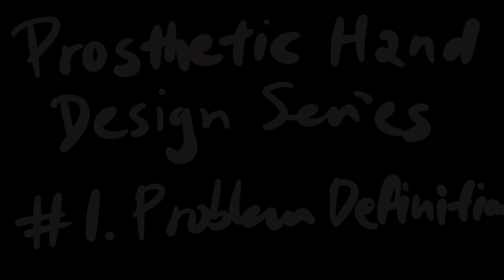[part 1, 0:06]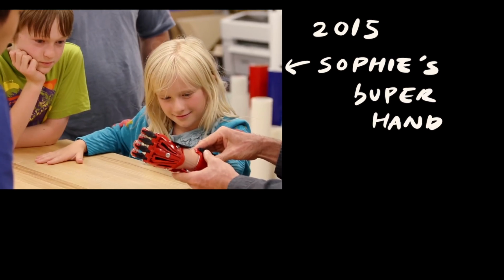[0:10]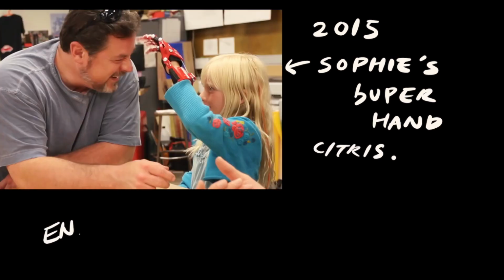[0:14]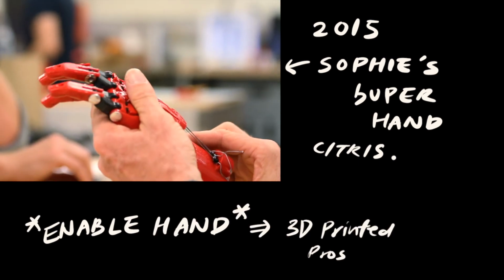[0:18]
The reason I'm doing this goes back to 2015. Back then, I 3D printed a prosthetic hand for kids with hand deformities, with a design provided by a maker group called Enable Hand. And using the model provided here, I was able to create a 3D printed prosthetic hand for a kid who was born with hand deformities.
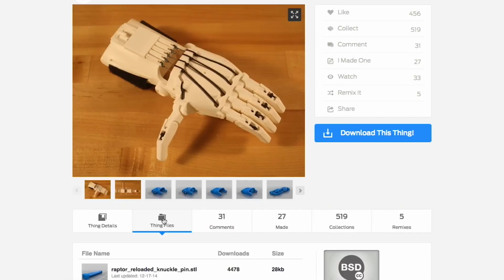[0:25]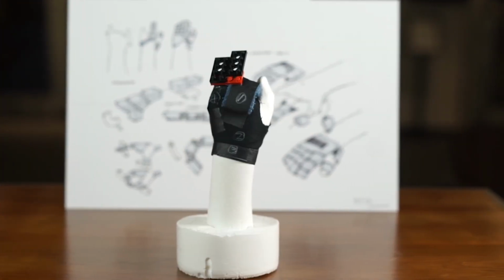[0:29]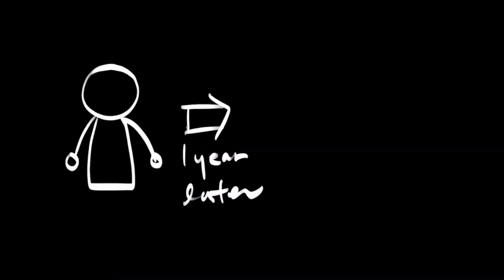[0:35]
The concept of 3D printed prosthetic hand was a game changer because they could be fabricated at a low cost compared to commercial prosthetic hands. It was especially effective for kids since it could be easily replaced multiple times as kids outgrow the size of the prosthetics.
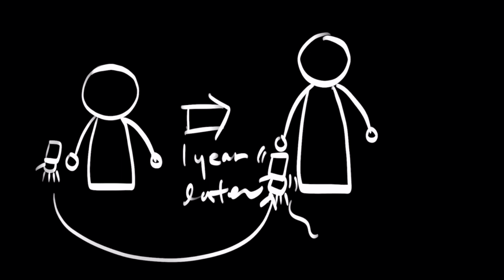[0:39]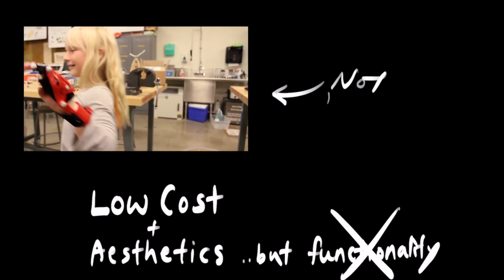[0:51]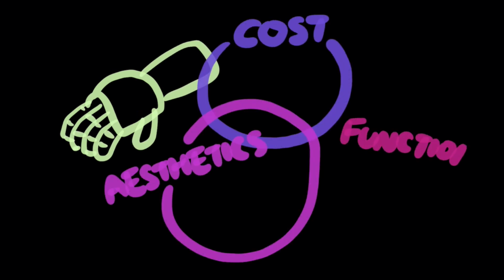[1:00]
However, the main issue with this design is that it is not functional for most of the hand types since it was so diverse. So even with its aesthetics and low cost, it did not provide enough functionality. I wanted to build my own prosthetic hand design that fulfills all three circles of cost, aesthetics, and functionality.
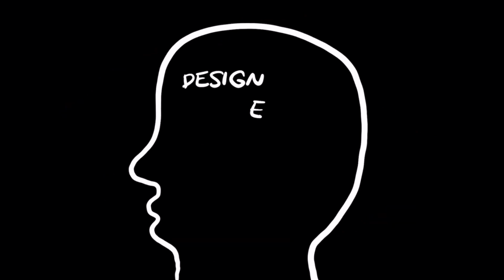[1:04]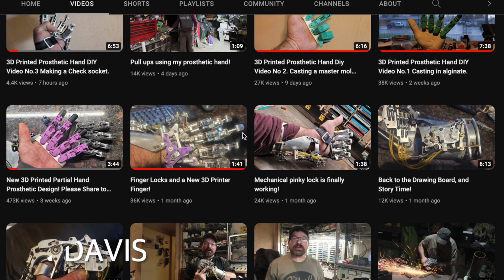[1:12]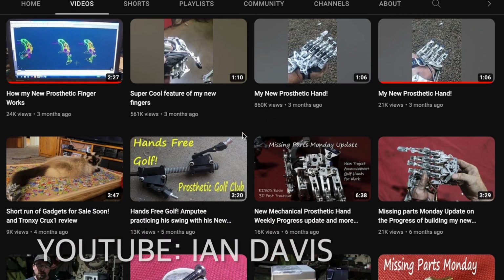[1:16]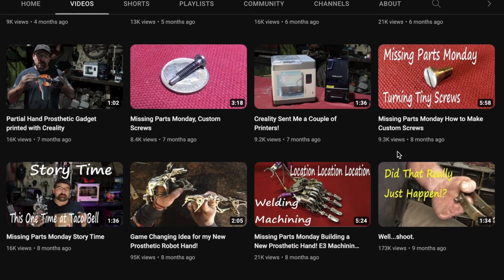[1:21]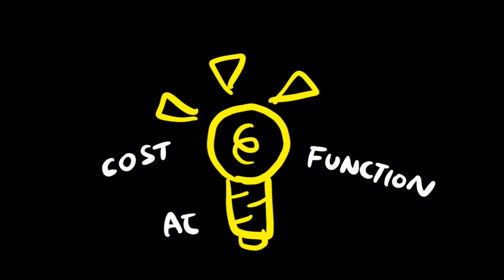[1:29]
But I did not have a proper design experience or skill sets at that time to solve this complex design problem. Then all of a sudden, in 2023, I saw this video by Ian Davis. This guy built his own prosthetic hand in his garage that was super functional with a badass looking steampunk design, which just looked fantastic. And this invention suddenly gave me a brilliant idea of making prosthetic hand that could fulfill functionality, aesthetics, and affordable price.
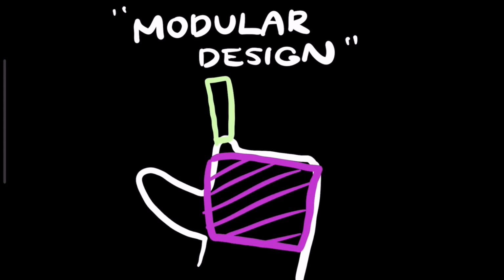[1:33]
And the key idea is to use modular design, where the prosthetic hand could be basically assembled based on kids' hand shapes like a Lego. I have not done anything in detail yet, but I'm trying to share the design process that could hopefully give some motivation to the other designers or makers to do the similar things by looking at it.
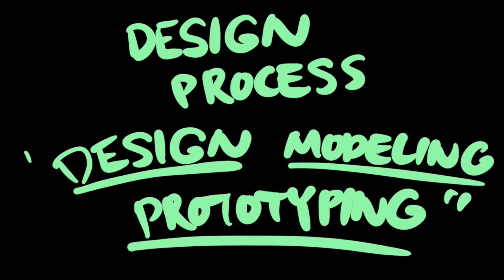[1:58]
So after this video, I'll try to update my progress as I go through the design process, such as concept drawing, modeling, and prototyping.
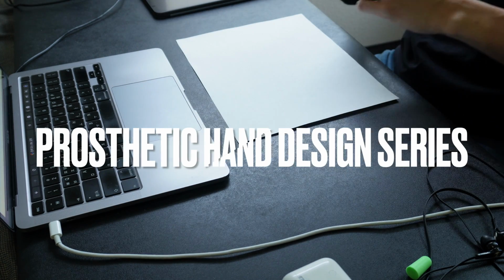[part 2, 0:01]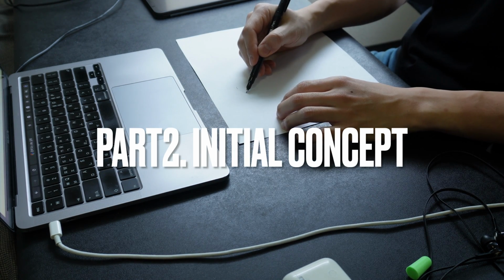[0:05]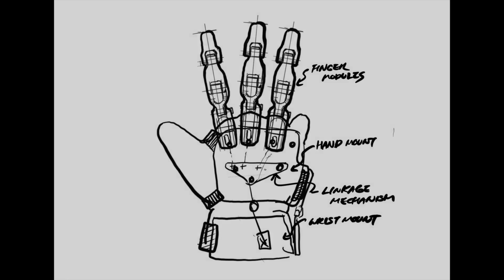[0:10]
Welcome to the channel, and this is the second prosthetic hand design series episode. And today I'll show you how I came up with the initial concept using a rough sketch.
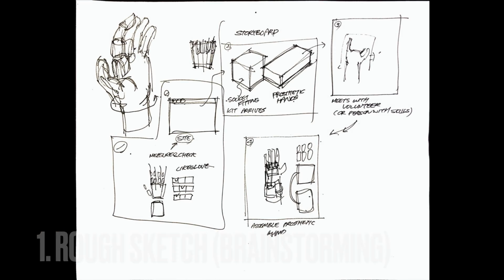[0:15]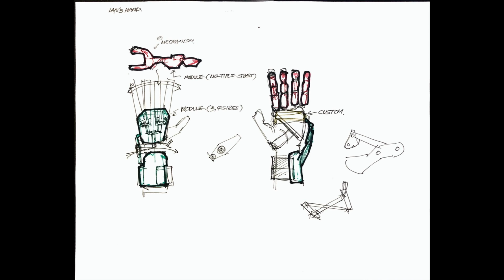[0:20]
I first started with the rough sketch using a pen and paper to just draw ideas that came up to my mind without thinking too much in detail.
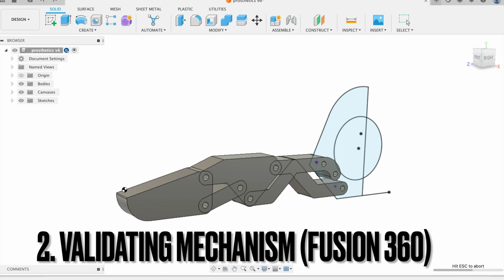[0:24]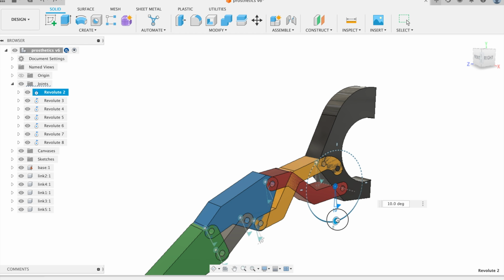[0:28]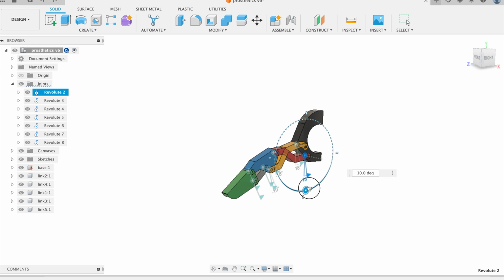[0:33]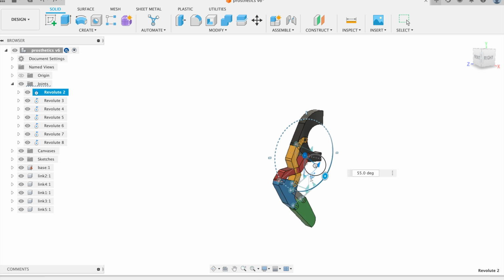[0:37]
After that, even though it's an initial concept generation stage, I had to make sure that the mechanism of the prosthetic finger part works fine. Using Fusion 360, I was able to check the components will work fine as long as I keep the linkage mechanism as drawn here. Then I moved on to iPad and started to draw the concept in detail.
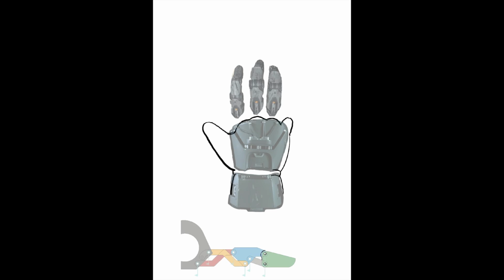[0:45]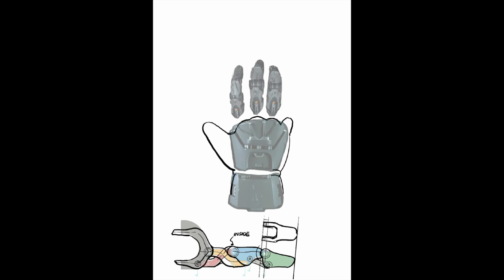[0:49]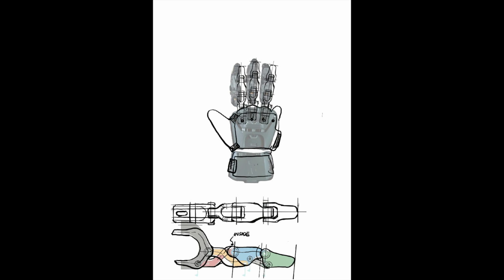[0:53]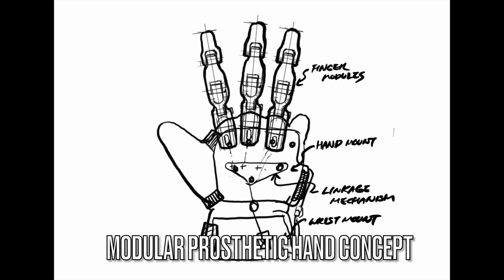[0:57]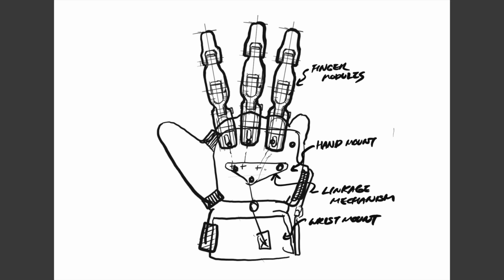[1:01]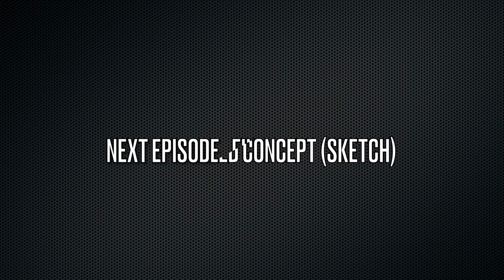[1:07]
Here, by using the reference images I found on Pinterest as a tracing image, I could basically draw on them, referencing how the position of the finger or part should be. With some detailed sketches using the iPad Procreate app, I finalized the initial concept of a modular prosthetic hand and finger module. And before moving into the modeling, like CADing stage, I'll evolve this concept into a detailed finalized sketch.
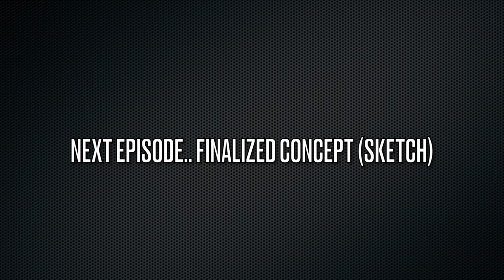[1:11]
So this was a quick update on the initial sketch part, and I'll see you in the next episode with the finalized concept with the sketch.
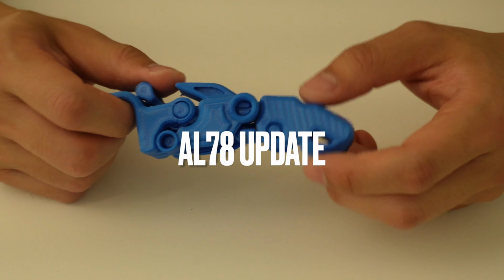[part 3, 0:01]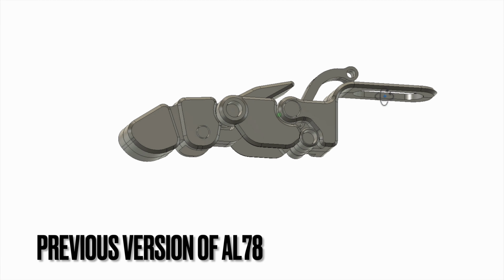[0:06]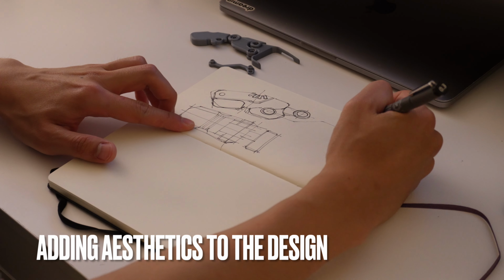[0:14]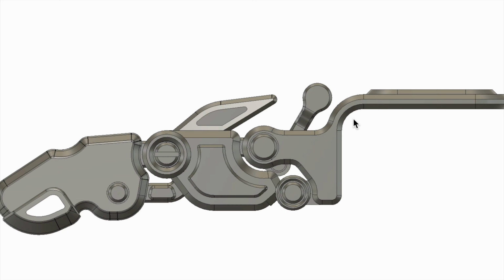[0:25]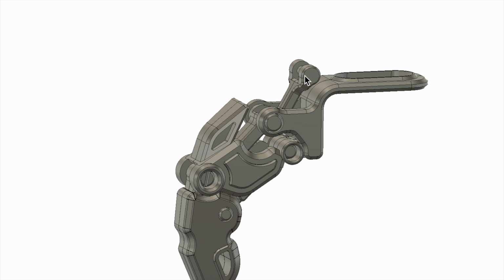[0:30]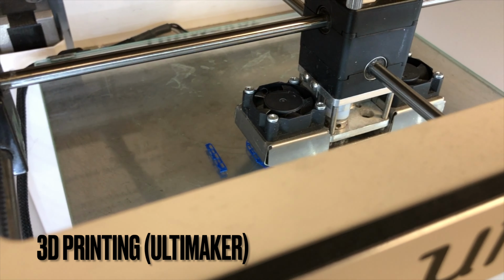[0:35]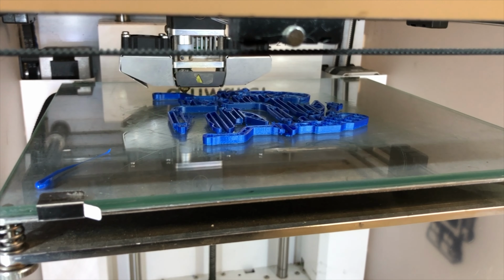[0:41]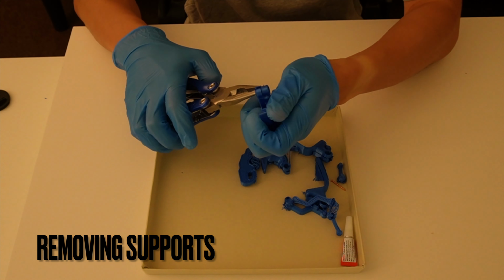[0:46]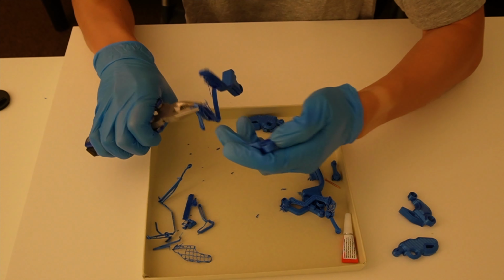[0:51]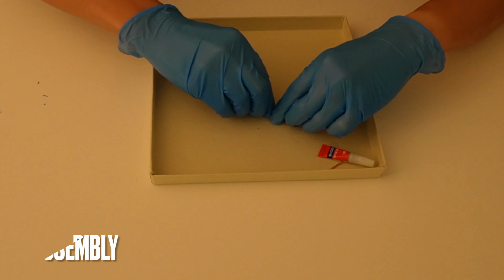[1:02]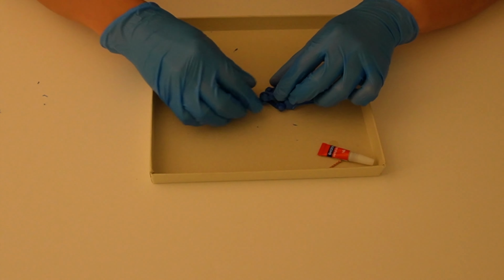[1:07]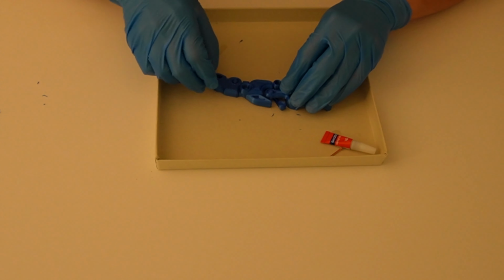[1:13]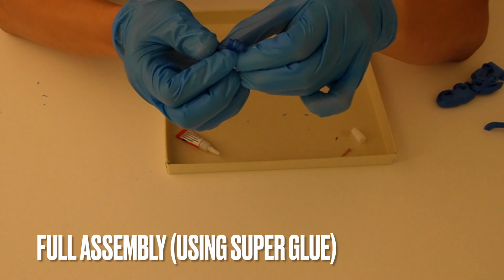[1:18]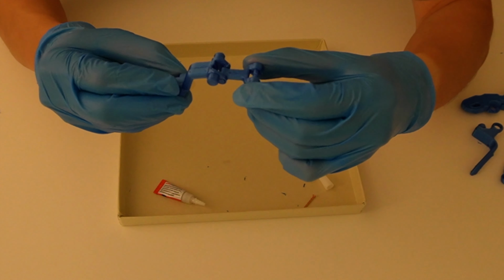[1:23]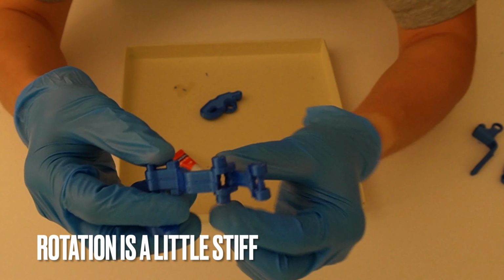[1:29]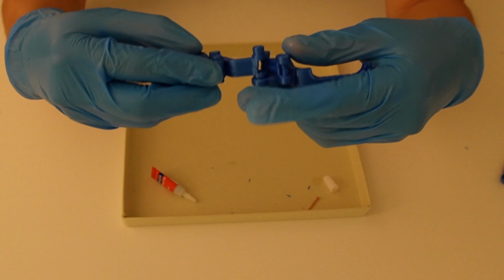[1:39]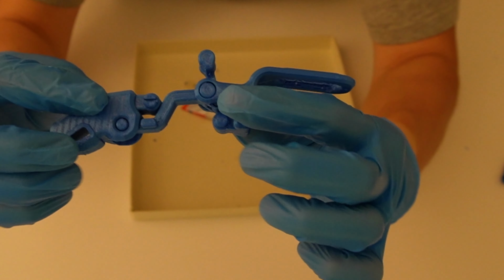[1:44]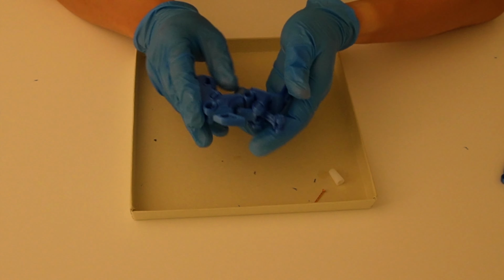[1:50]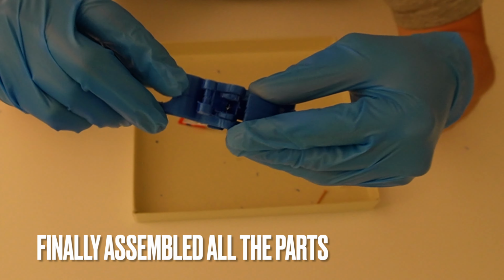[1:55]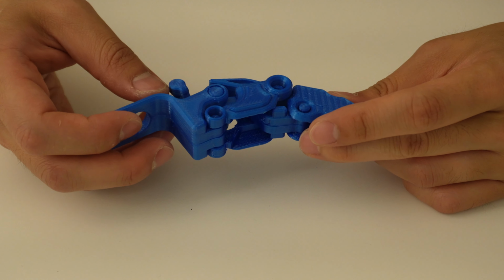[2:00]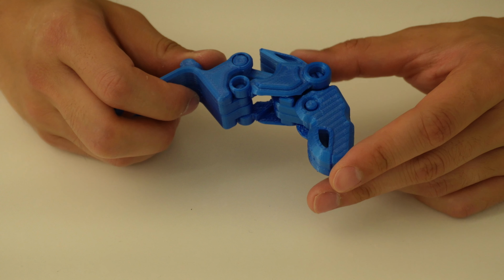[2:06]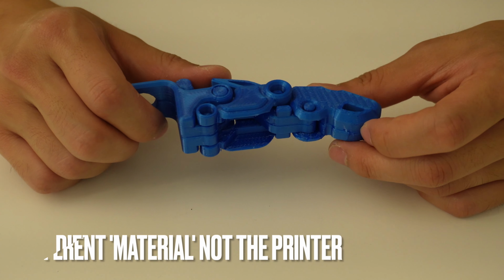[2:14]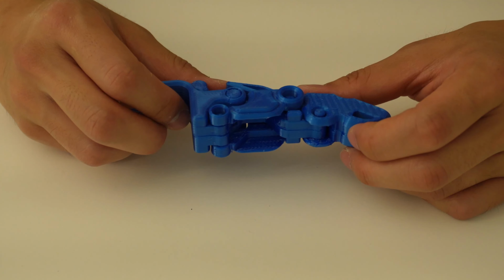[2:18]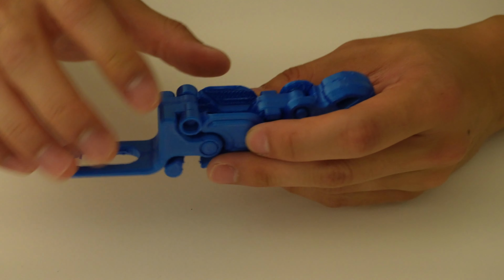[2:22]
Quick update on the second prototype of AL78. What I really wanted to improve compared to the first prototype was the aesthetics, actually. But the problem is that I used a different 3D printer this time. I used an Ultimaker with breakaway filament as a dual extruder last time, which really made a good quality on the surface part that requires supports inside.
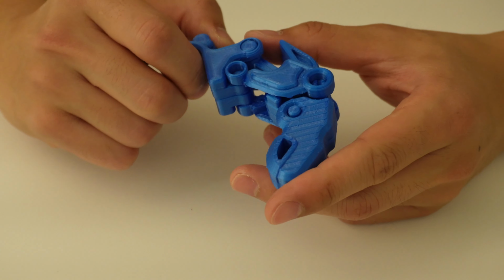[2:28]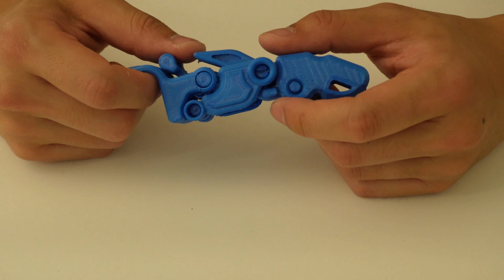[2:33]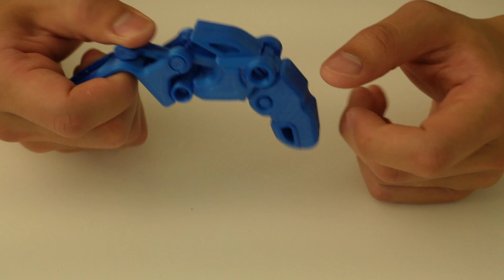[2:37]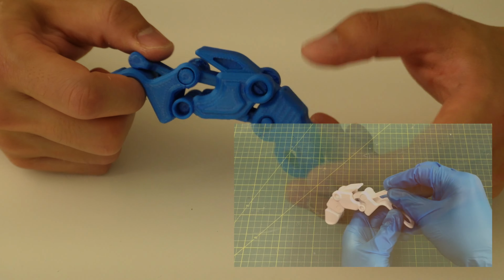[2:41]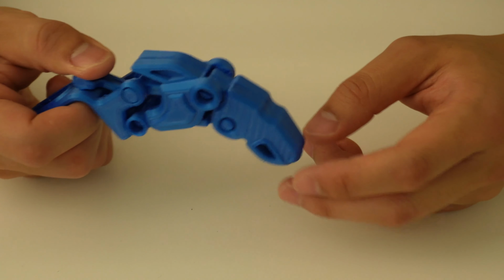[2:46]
However, I was a bit arrogant this time, thinking that it might actually work without the support material, so I went with just a single material and ended up having this very stiff mechanism compared to the very smooth transition that was happening in the last prototype. So yeah, that's pretty much the update for this prototype.
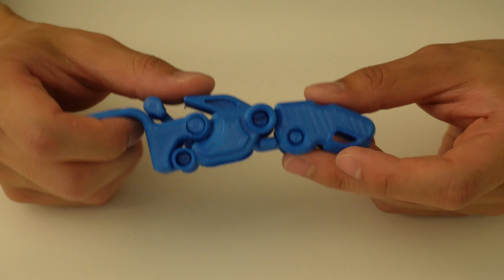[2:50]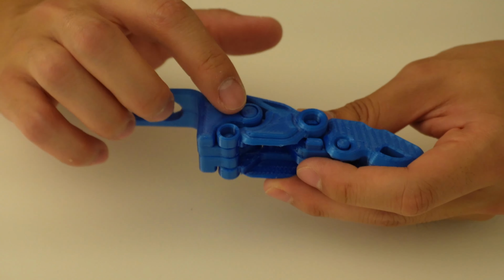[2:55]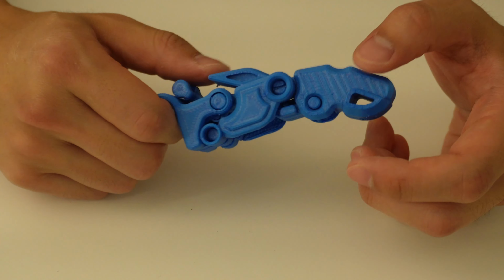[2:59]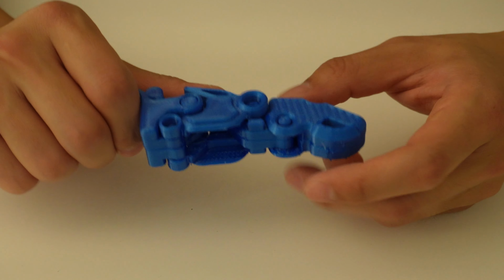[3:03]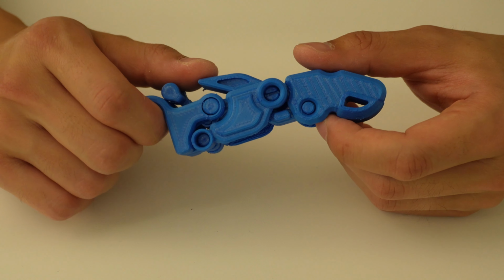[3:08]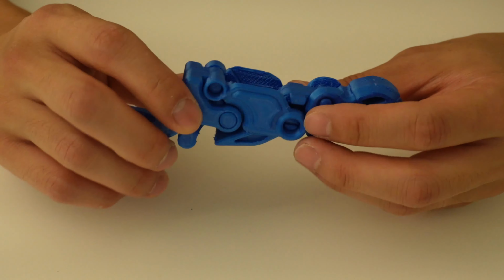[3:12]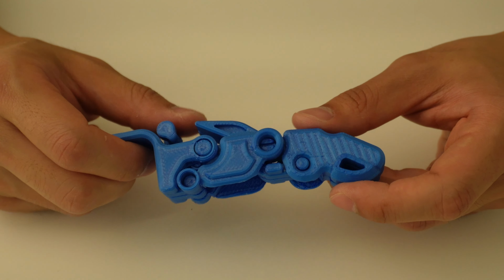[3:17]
And for the next, the third AL78 version, I'm trying to implement some sort of spring system that can actually put this actuated finger back to the original position. And second, I'd like to add a little bit more aesthetics to it. And lastly, I will use the breakaway support filament again to have smoother actuation. So yeah, that's pretty much it for this version's update.
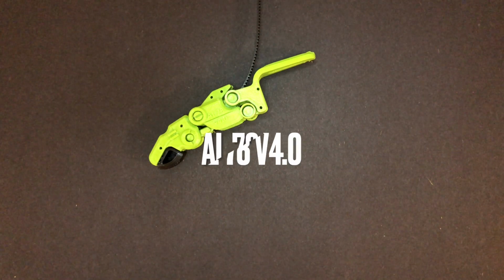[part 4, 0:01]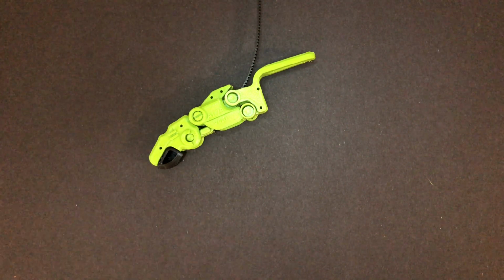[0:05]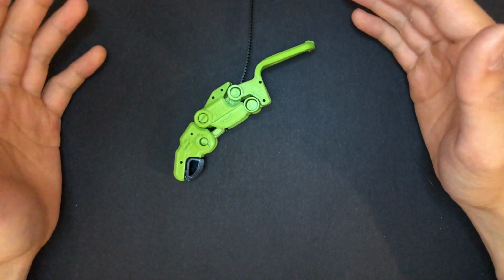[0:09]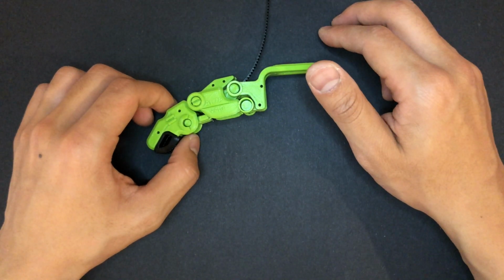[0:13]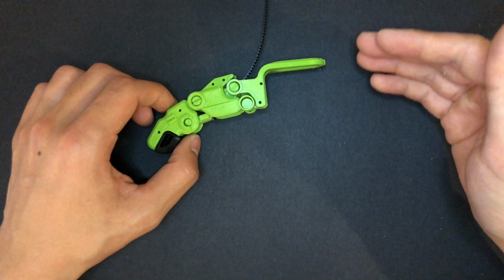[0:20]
All right, so here's the update from this week's progress of AL78, modular prosthetic hand, modular prosthetic finger actually. I tried to change three major features on this model and it ended up having a little bit of issue on the assembly part. So I'm just going to tell what I tried to change and what did not work.
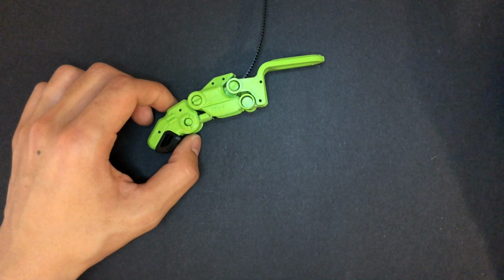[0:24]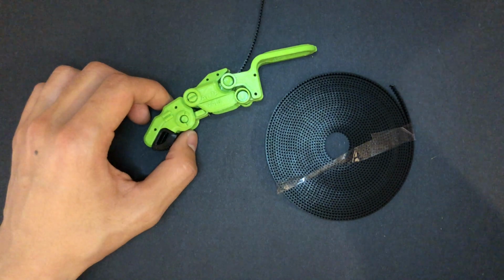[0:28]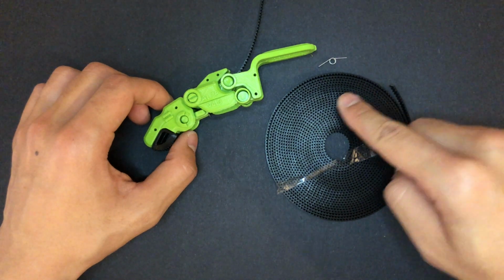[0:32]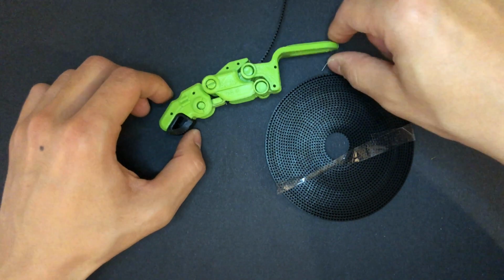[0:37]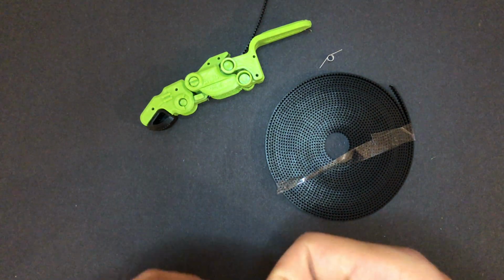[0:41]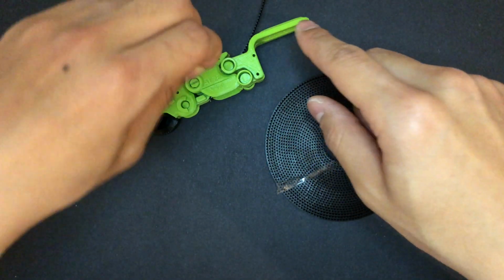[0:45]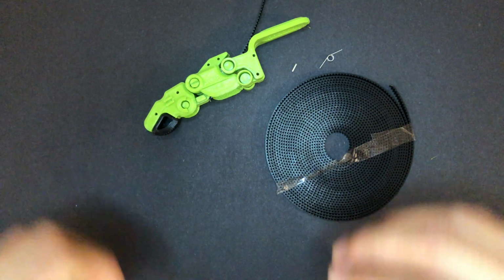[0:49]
So three major changes were, first, using timing belt for the tensioning system. And the second was to use mechanical spring to make a returning motion of the prosthetic finger. And last one is, instead of using super glue, I tried to use a small pin that can go through the model so it can assemble like a plastic model.
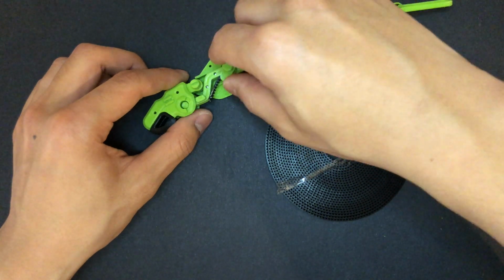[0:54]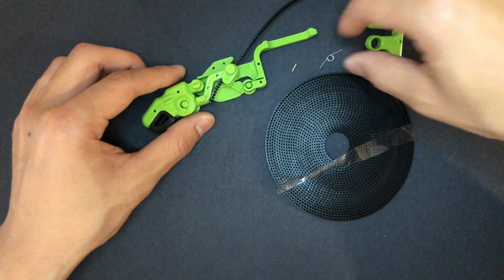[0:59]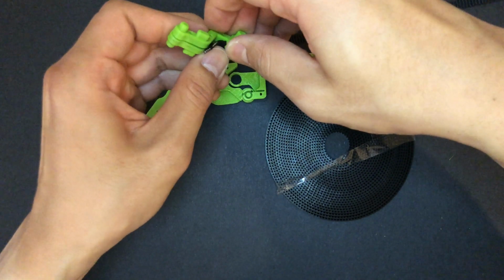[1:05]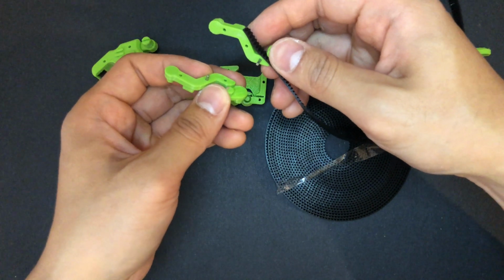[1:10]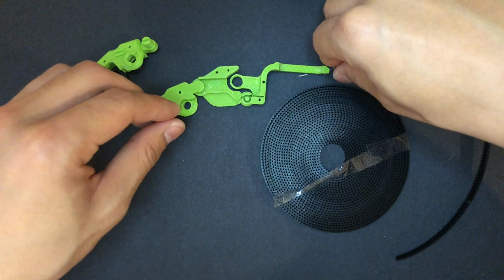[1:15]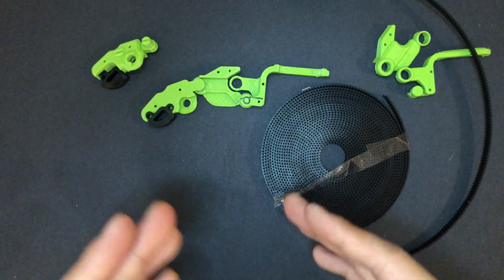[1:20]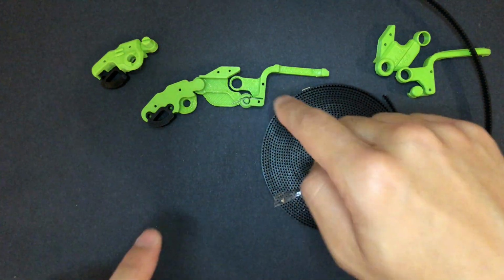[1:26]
And if I explain it by disassembling it, we can see that I input the timing belt in the middle part and also incorporating small dowel pins to connect those two parts together like this, eliminate the use of super glue. And the last part was trying to use the mechanical spring at the bottom part like this, but there are some little features that kind of prohibited the mechanical spring from working. So I'll try to update that on the next model.
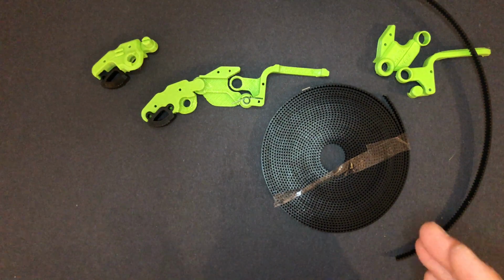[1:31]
So those were small updates about the current progress of AL78, and I'll try to update on the next week's progress.
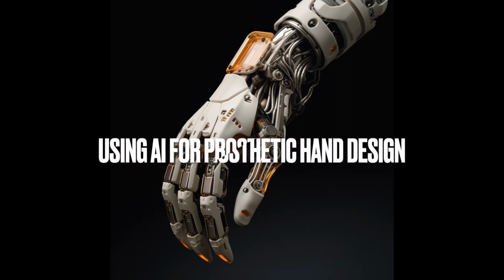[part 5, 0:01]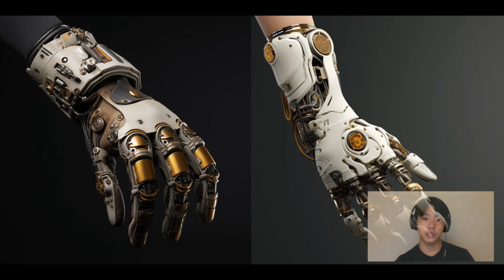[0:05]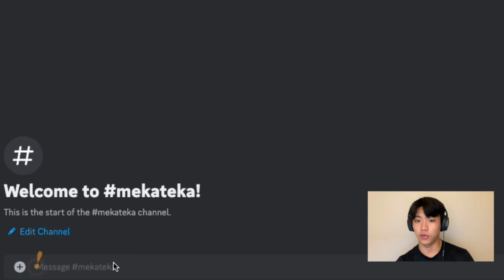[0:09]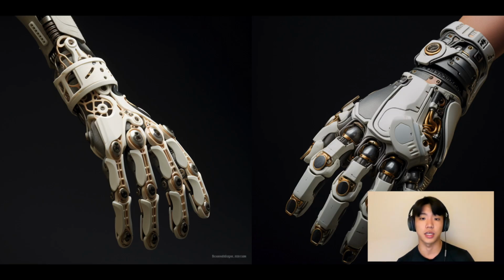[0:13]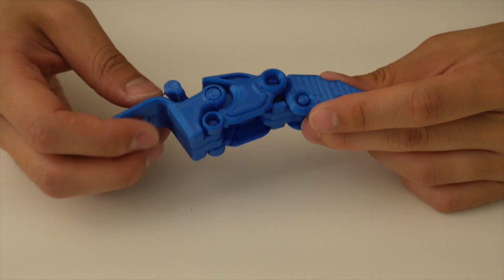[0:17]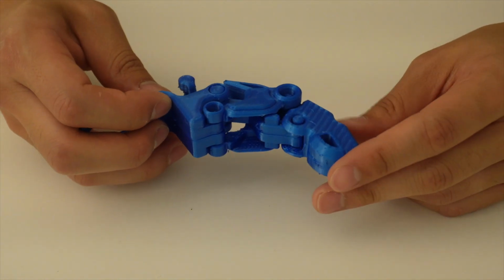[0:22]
In today's video, I'm excited to share my experience on how I used Midjourney for the first time to create cool reference images for the prosthetic hand design that I'm making. I've been working tirelessly on developing this modular prosthetic hand for a few months now, and I've found myself struggling to achieve the aesthetics that I envision.
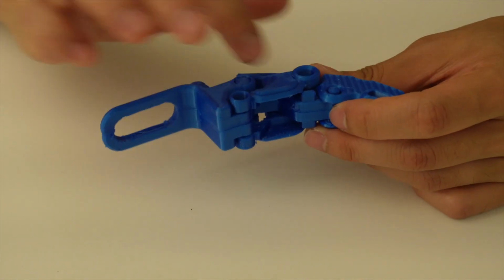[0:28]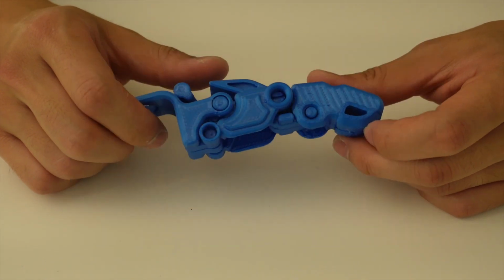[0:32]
While functionality is undoubtedly a top priority, I've always wanted the prosthetic hand to look as cool as those futuristic robotic hands that we see in sci-fi movies.
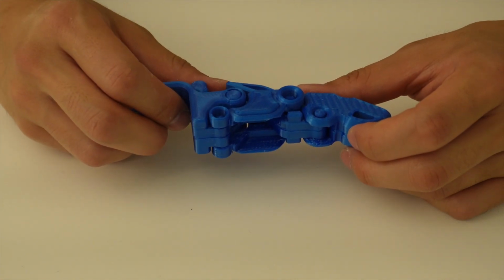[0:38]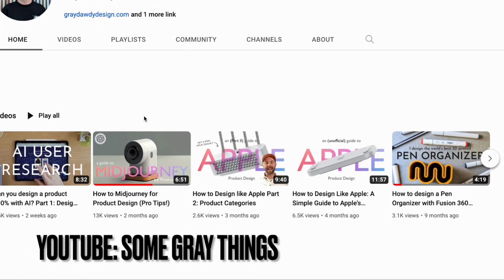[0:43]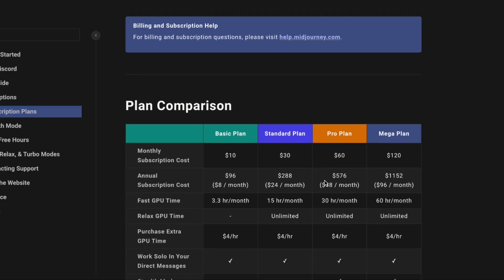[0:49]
That's when I stumbled upon a video by Some Gray Things, which tells about how even beginners can harness the power of Midjourney specifically for industrial designs. And after watching this tutorial, I decided to give it a shot using Midjourney's basic $10 a month plan. And the results were truly remarkable.
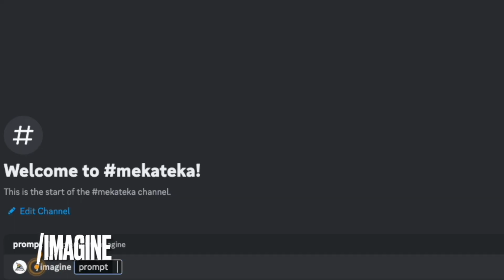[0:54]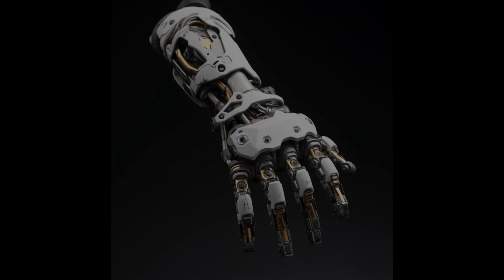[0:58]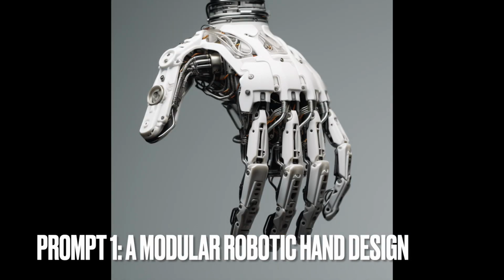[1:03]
I kicked things off by using the imagine function with a rather general prompt, a modular robotic hand design. This took a matter of seconds to generate these images, and I must say the results were very impressive.
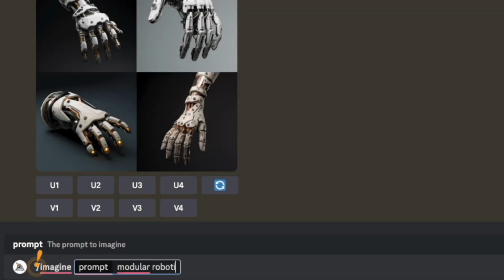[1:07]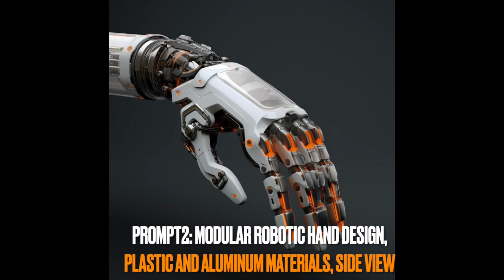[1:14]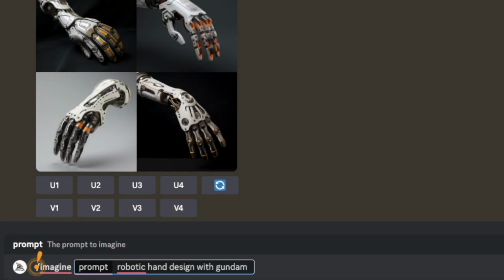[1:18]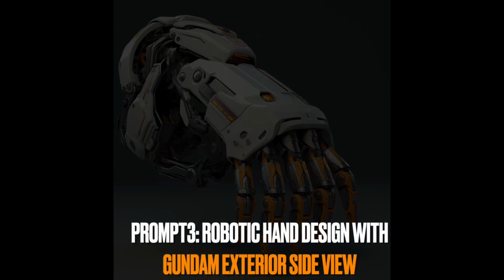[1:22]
Next, I wanted to incorporate material properties and even added a side view prompt for modeling. However, the generated images were primarily isometric views. I even experimented by adding Gundam exterior, but it didn't quite resemble the actual Gundam parts that I was hoping.
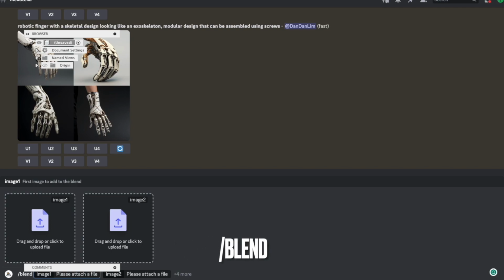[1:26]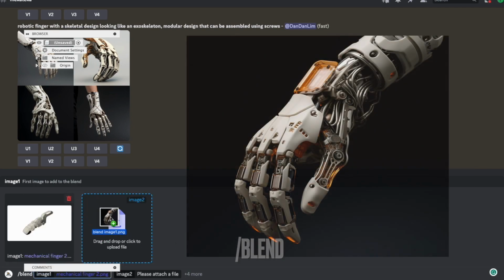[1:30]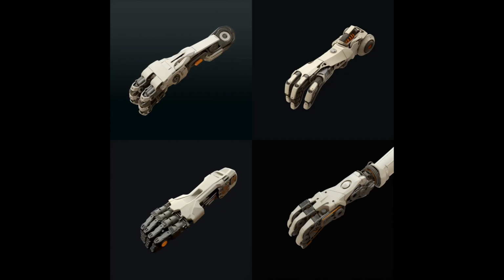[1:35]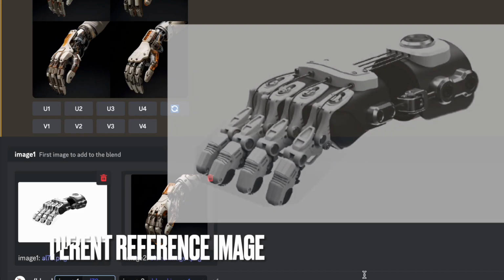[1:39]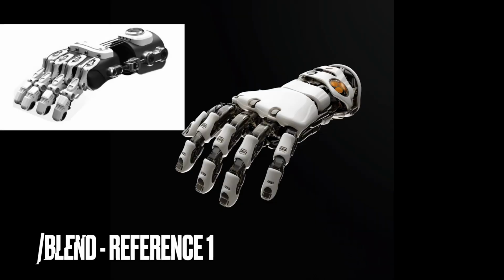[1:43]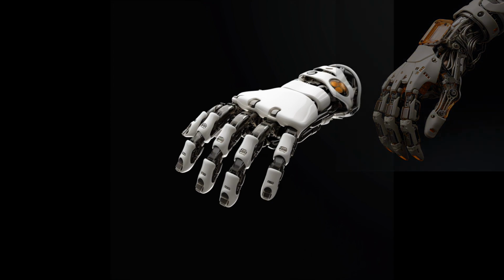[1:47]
I also explored the blend function to see if I can achieve better results by blending with the original design of my prosthetic finger. Surprisingly, it produced a full hand design rather than the finger part, which wasn't what I initially expected. However, it turned out to be a promising approach as the results looked better in comparison to my previous results when I used a full hand as a reference image.
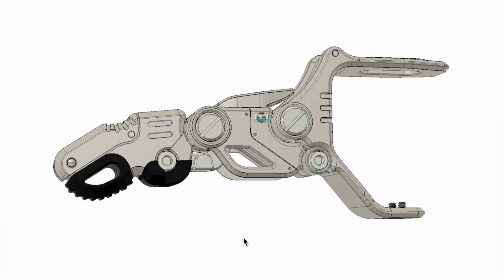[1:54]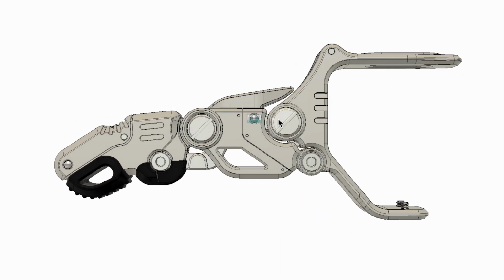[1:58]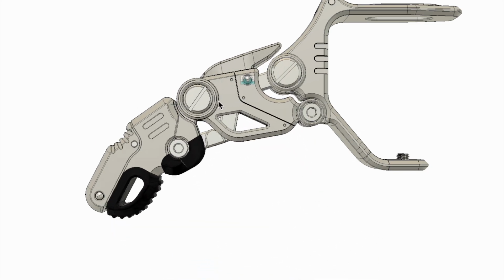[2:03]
Now, you might be wondering, how can we use these cool generated images to create a fully functioning prosthetic hand? Even though I spent less than an hour experimenting with this tool, I can already see its potential in providing valuable reference images to enhance the existing design.
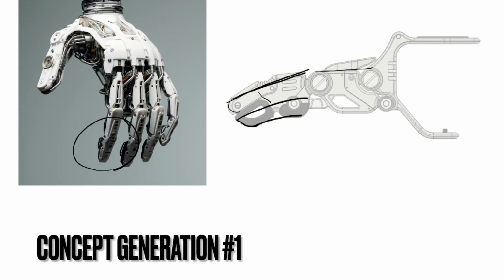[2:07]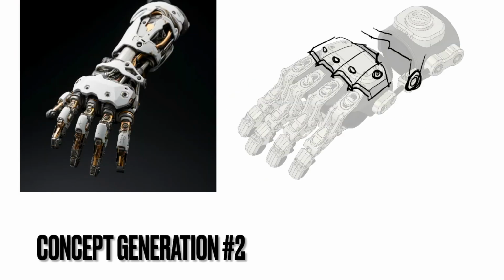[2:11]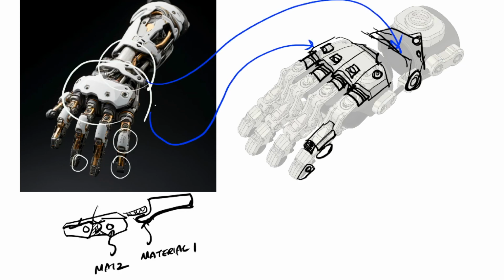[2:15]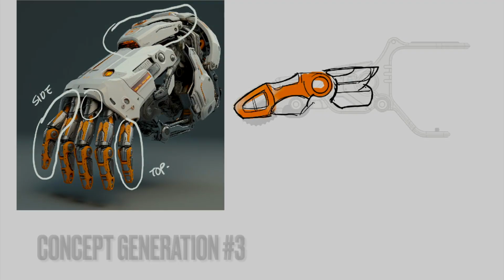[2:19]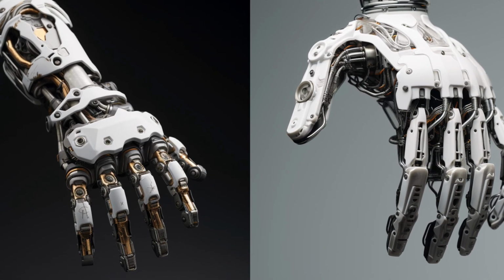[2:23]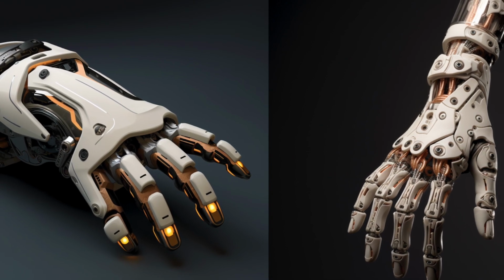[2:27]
These time lapses show you how I use these generated images as a reference to extract features that can be incorporated into new aesthetic design of the prosthetic hand. So that was the latest update on my exploration of using generative AI tools for mechanical design, and I'm excited to see if I can transform these newly generated concepts into a fully functional prototype in the future.
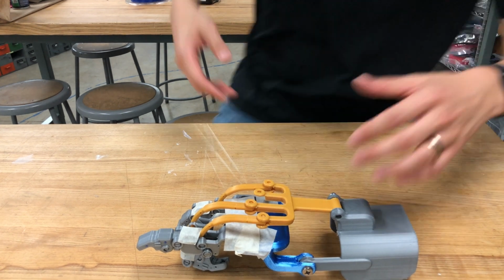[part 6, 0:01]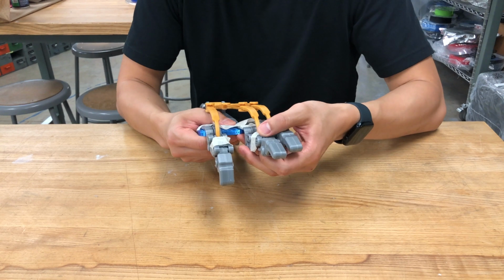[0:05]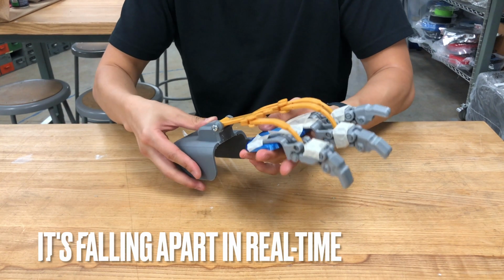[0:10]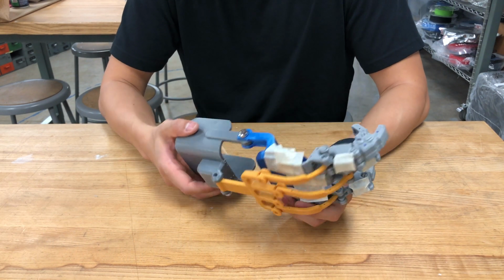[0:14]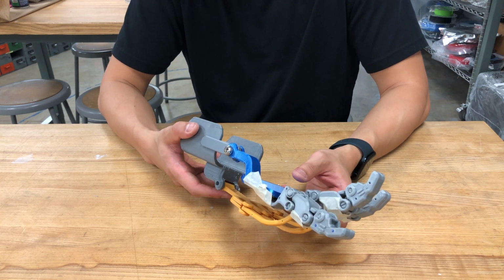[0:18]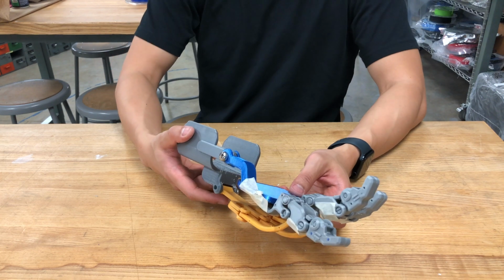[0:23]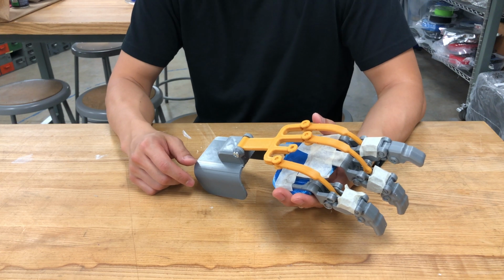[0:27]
Hello everyone. So I'd like to give a brief update about a mess that we made right now with assembling this prosthetic hand. But it's always good to give some of the updates on what's happening right now in this project.
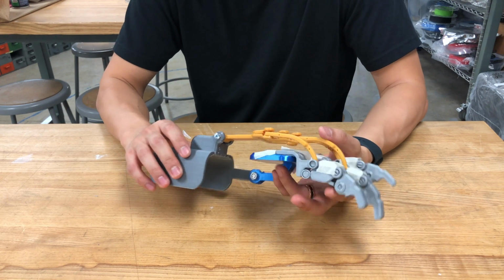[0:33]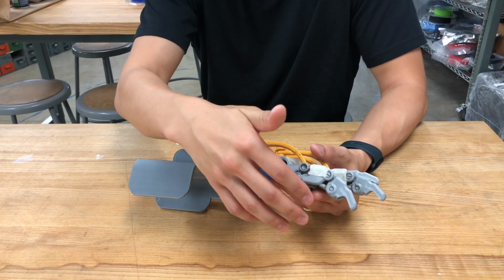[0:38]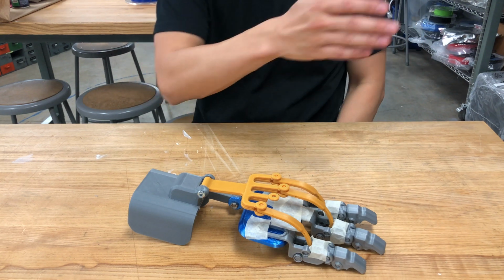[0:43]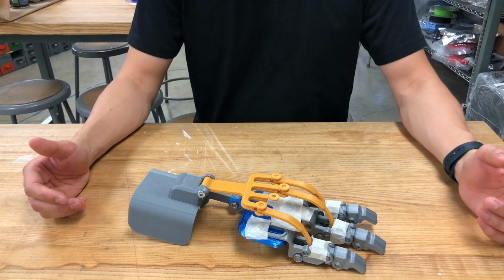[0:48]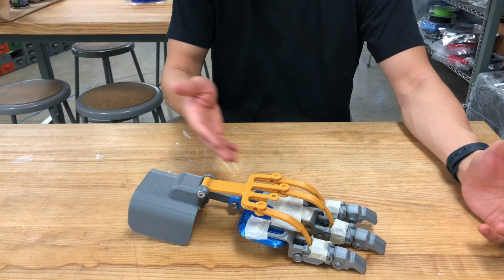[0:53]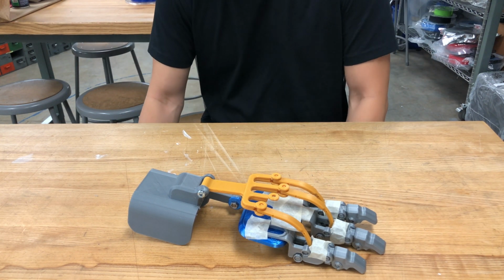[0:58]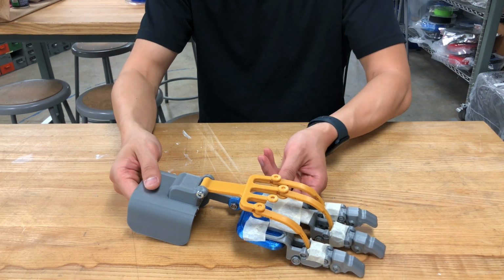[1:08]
So you know how in the previous videos I talked about the design and fabrication of this prosthetic finger, but I thought, why don't I move from there to build a full working mechanism on the hand. However, I was too optimistic that implementing this many parts could just work in one shot. So it ended up having multiple tapes and not working at all. Not at all, but like 20 to 30% of what I envisioned before.
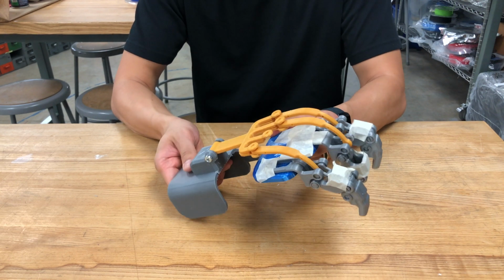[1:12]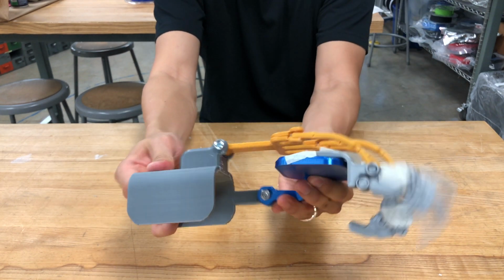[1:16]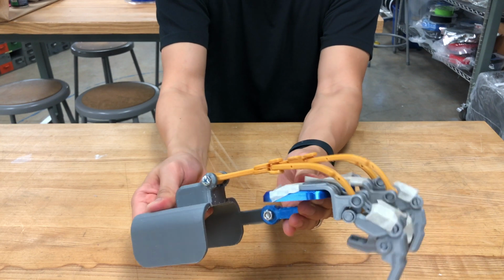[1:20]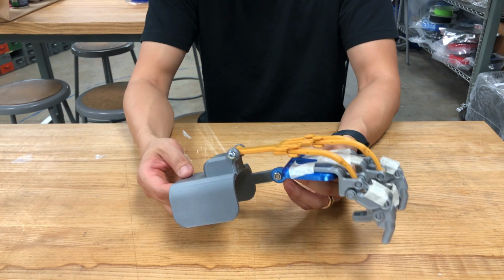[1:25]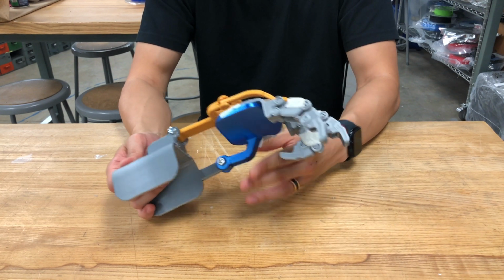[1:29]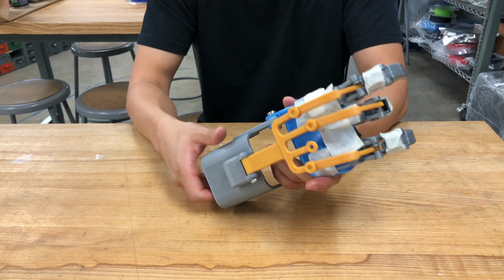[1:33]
But yeah, it's breaking in real time, but you can see that the wrist movement here could translate into a finger movement, right? I mean, this is something that I have to modify to have a smoother transition between the wrist movement and the finger grasping motion. But yeah, that's pretty much the update.
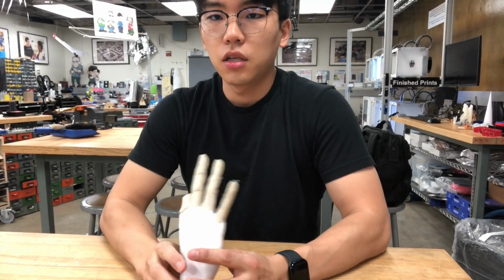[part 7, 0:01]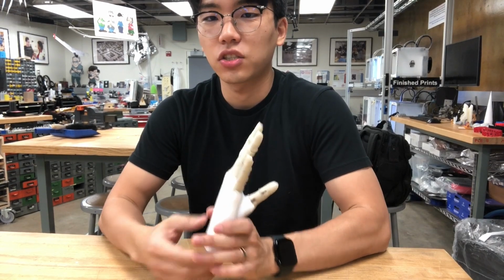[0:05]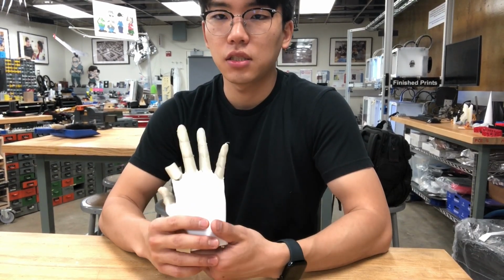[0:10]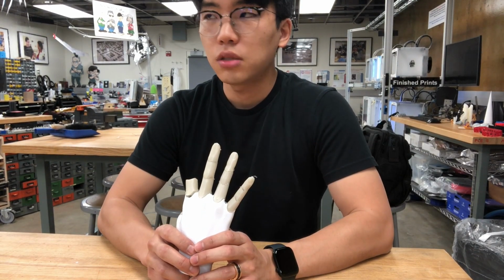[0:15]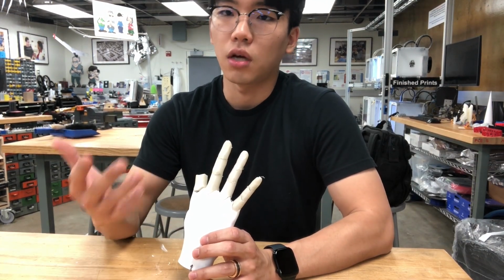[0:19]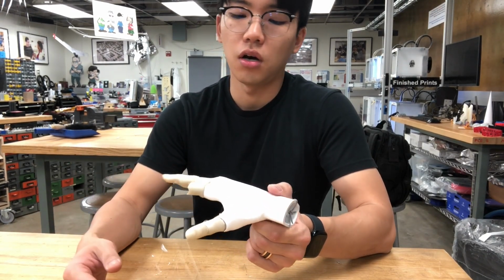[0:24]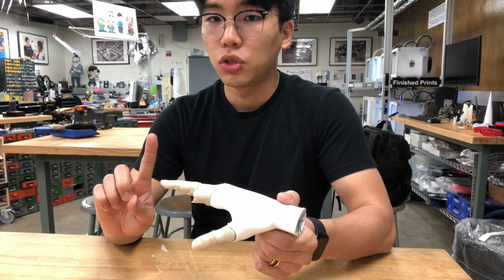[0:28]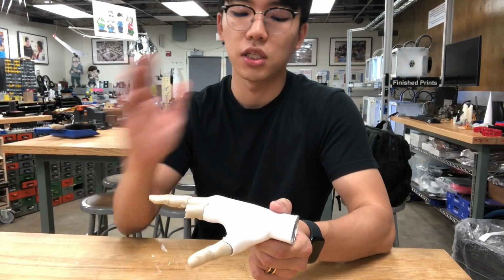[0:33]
Quick update on the progress that we have. This hand is not designed by us. It's actually a file that we download from Thingiverse. And the reason that we have this as a part of making prosthetic finger project is that since we cannot simulate the movement of finger amputees with our full hand, we thought having a representative model of those type of amputation would be very beneficial to simulate how our prosthetic hand is going to work once it's put on the
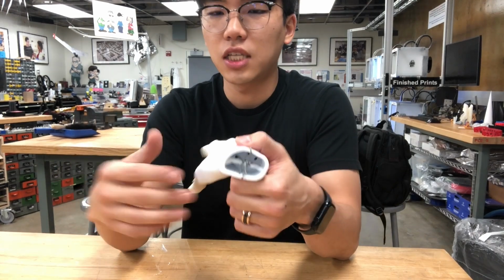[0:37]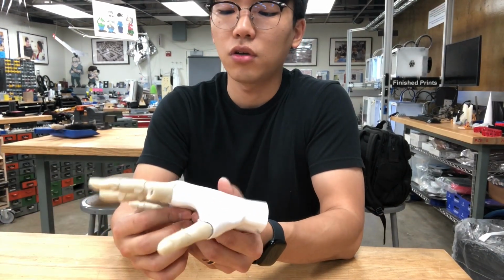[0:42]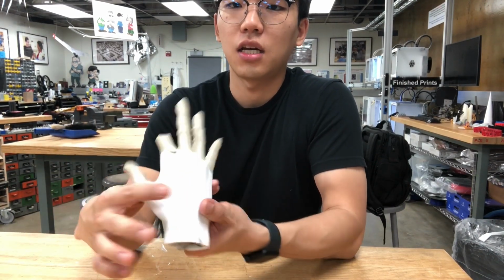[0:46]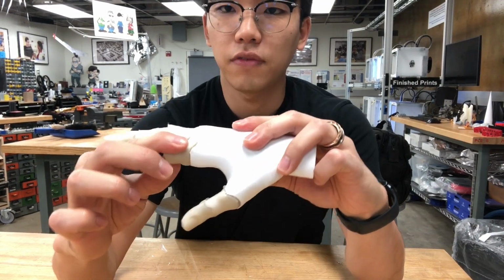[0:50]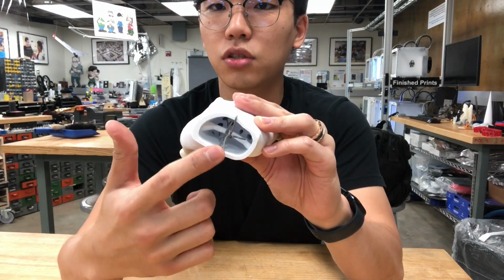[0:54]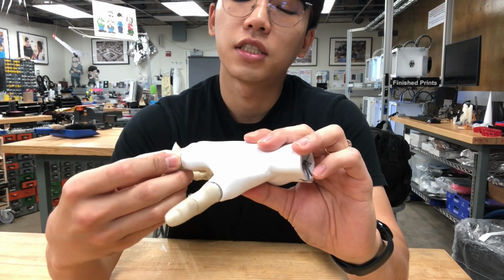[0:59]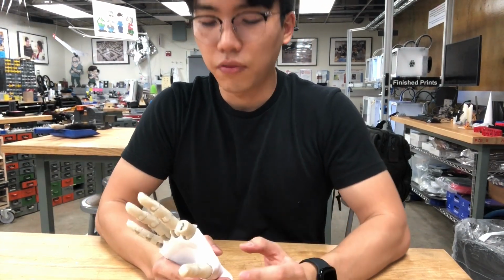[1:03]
users. So this model is originally intended to use some sort of elastic tendons, but since we do not have those, we just hot glued everything as it is, as a static, but only this part was left to be moved like this. And as you can see, we just used an electric wire that we found from a pile of trash. It seems like the movement is okay, but in order to suffice the purpose of a simulator, I
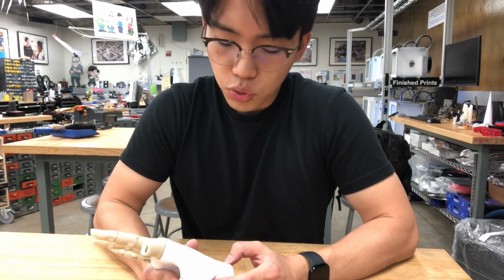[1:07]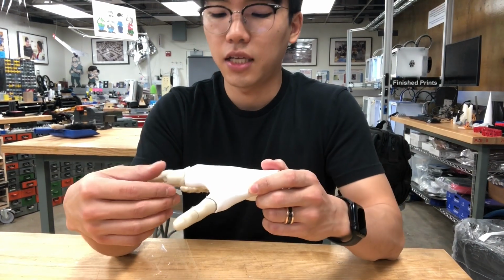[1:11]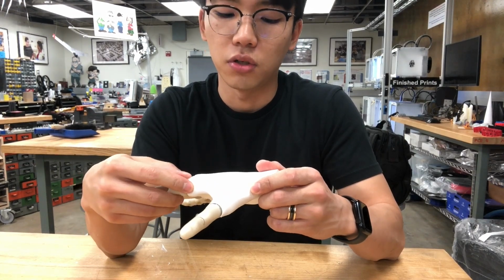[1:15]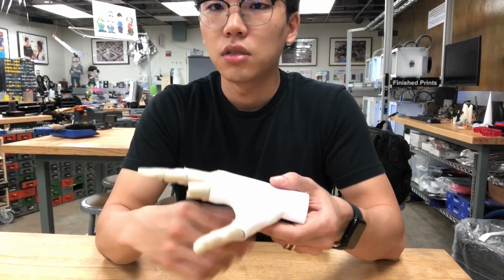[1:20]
think we do need to aim to design our own so that it can have a better motion on this revolute joint of the MCP joint. And that's probably gonna be our next step on the design. So stay tuned.
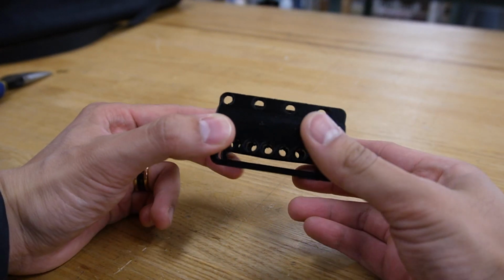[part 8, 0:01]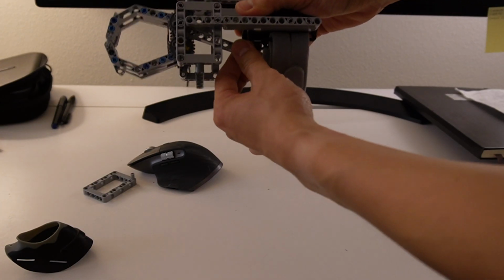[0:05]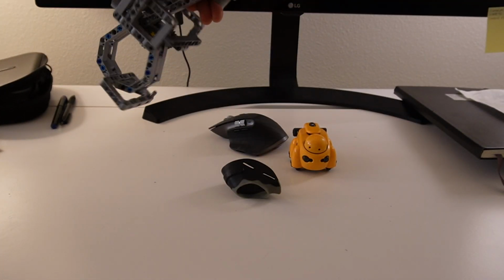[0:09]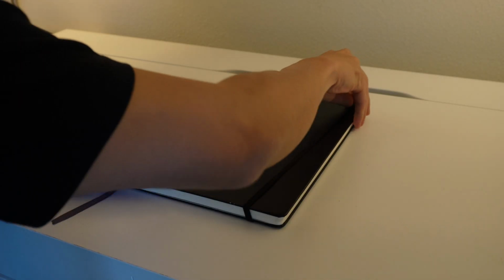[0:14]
This episode, I'm going to walk you through how I designed this custom Lego part that can be used to prototype a functional prosthetic hand capable of grabbing various objects as demonstrated. The part I will be designing is a wearable forearm mount to which Lego parts can be attached.
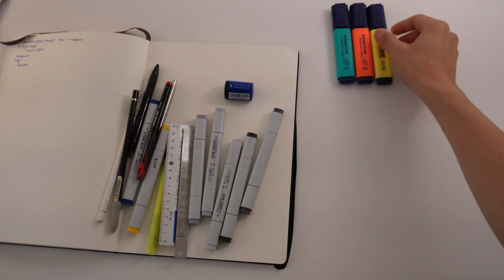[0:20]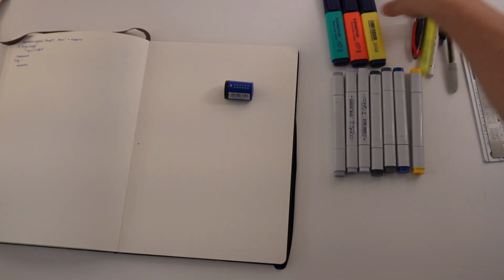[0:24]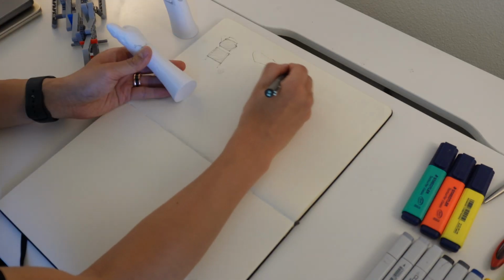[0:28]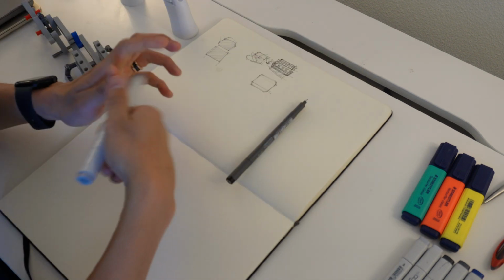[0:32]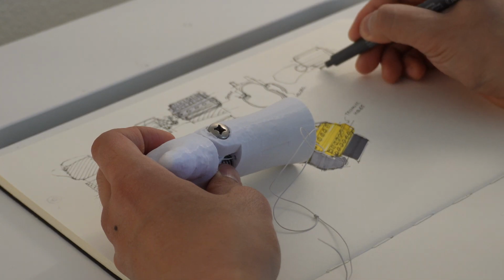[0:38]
First, I start with a sketch using pen and markers. This does not have to be perfect. It really helps quickly iterate the idea of what I'm going to create. The sketching process serves two purposes. One is idea exploration, and the other is for communication between team members.
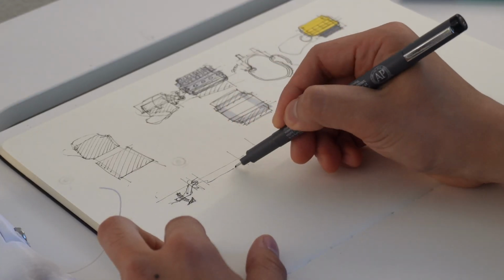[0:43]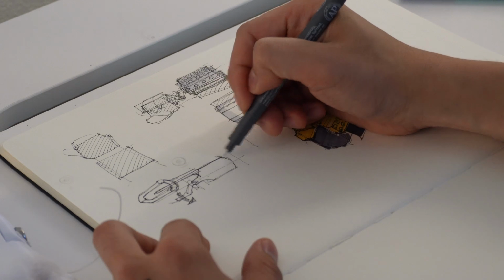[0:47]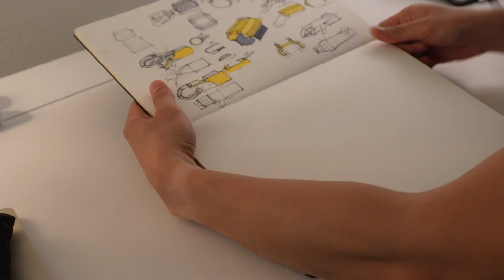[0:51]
Even though using computer-aided design right away can give us exact dimensions, I find it quite challenging to design in 3D without first sketching in 2D to make sure that what I'm going to draft in 3 dimensions.
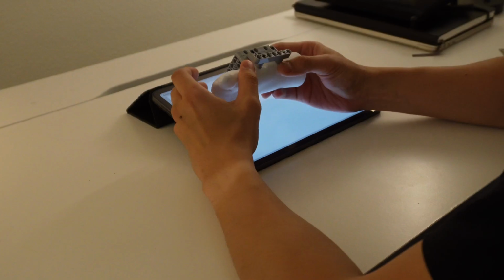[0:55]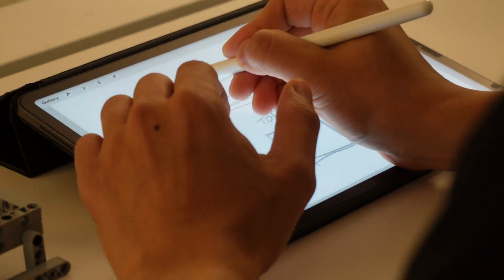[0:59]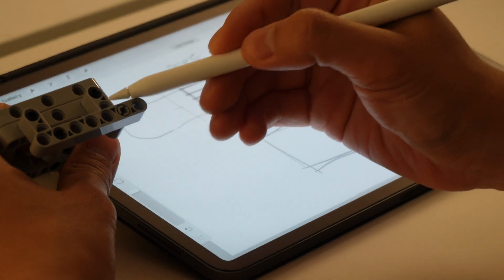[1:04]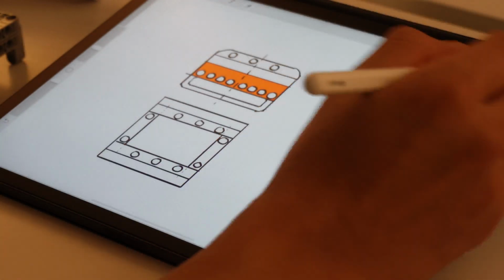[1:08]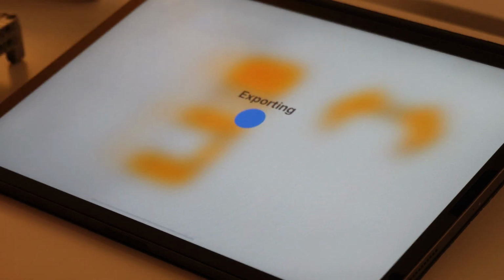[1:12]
Once I'm done with the sketch, the next step is drawing on the iPad. I believe that there is no right or wrong way to use an iPad for product or mechanical design, but I find it quite useful for drawing the side, top, and front views of the part. Having grid lines in the background often helps, and I use both GoodNotes and Procreate apps for the sketch.
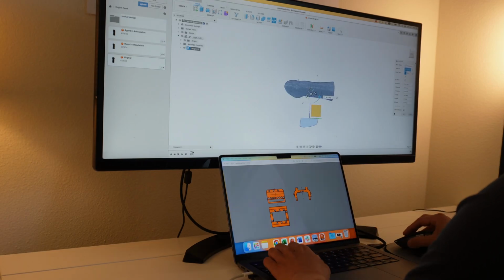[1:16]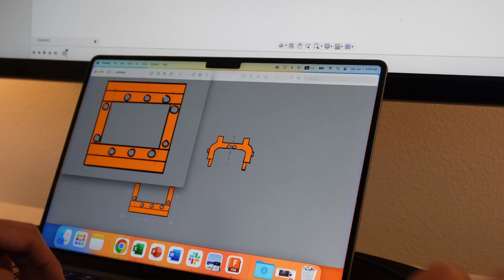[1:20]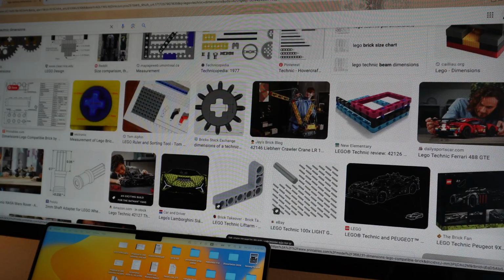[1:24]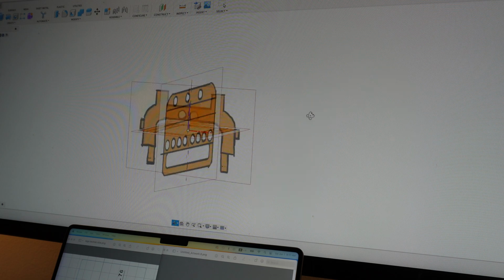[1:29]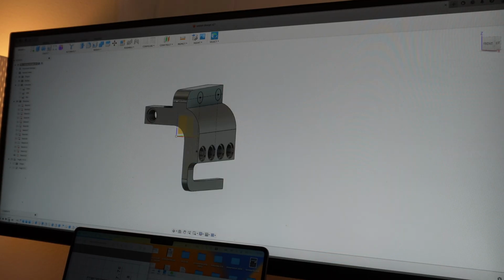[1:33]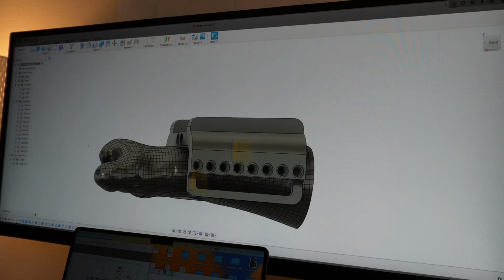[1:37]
After finishing the 2D sketches on the iPad, it's time to make a 3D model using CAD software. I use Fusion 360 because it's free for hobbyists and students, and also it runs on Mac. While using the drafted front, side, and top views from the iPad, I also ensured that this part has exact dimensions matching other LEGO Technic parts, such as dimensions for hole patterns and thickness.
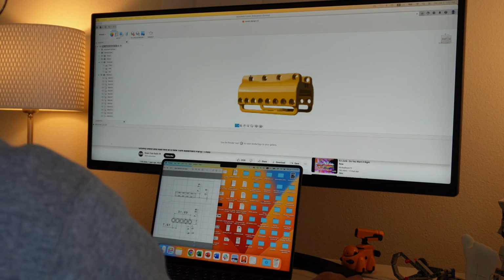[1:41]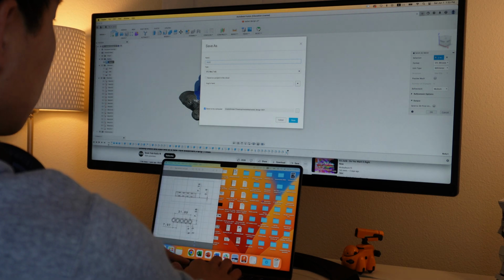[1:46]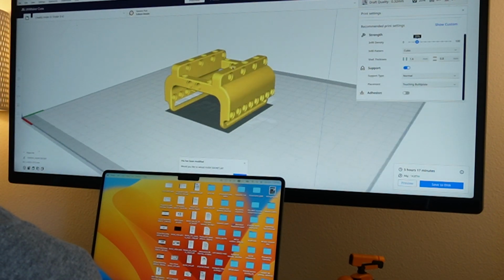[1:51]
This is the finalized part of the mount. It has multiple holes that LEGO parts can clamp into and space to attach the forearm wrap. The last part of the design process is the 3D printing.
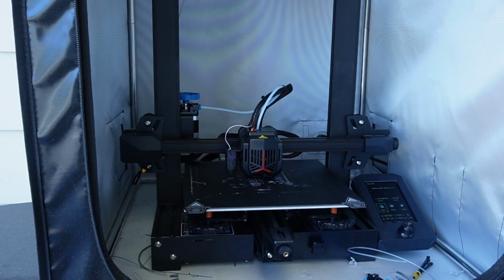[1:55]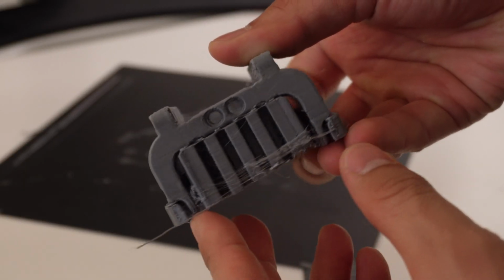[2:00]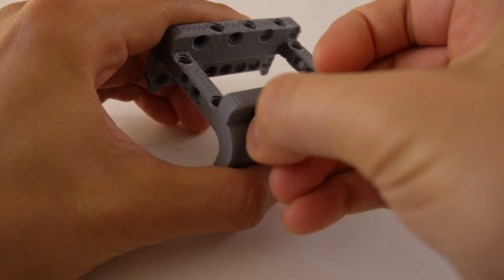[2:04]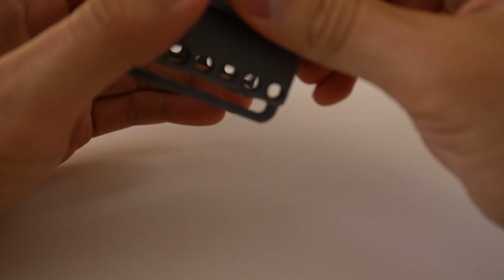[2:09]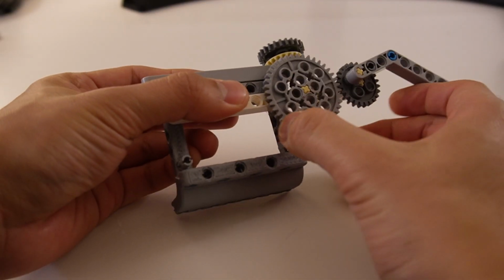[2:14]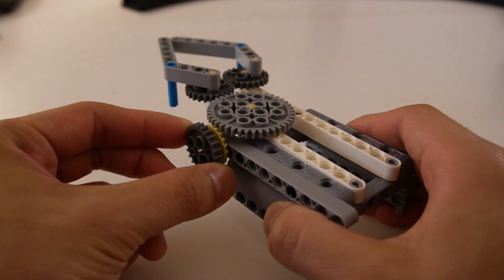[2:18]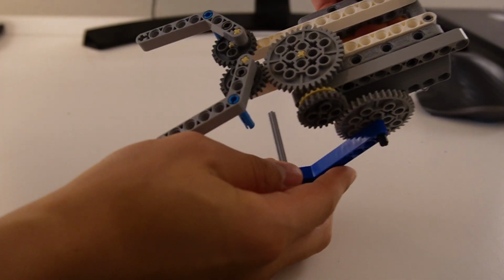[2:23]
I first tried using an Ender 3 3D printer at home to quickly see if the part is feasible. The print took a total of 4 hours. Since the main function of this mount is to be used with other LEGO Technic parts, I attached some parts to see if we could build a grabber on the top. The key mechanical input would be wrist rotation, which translates into the opening and closing of the grabber.
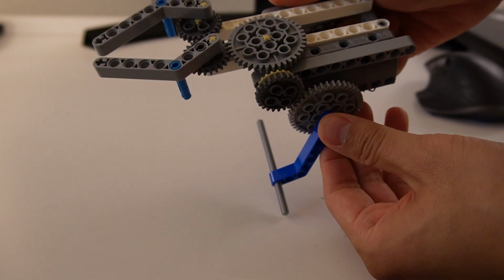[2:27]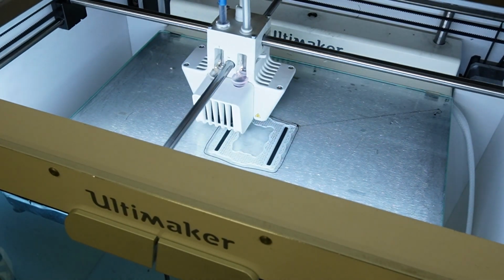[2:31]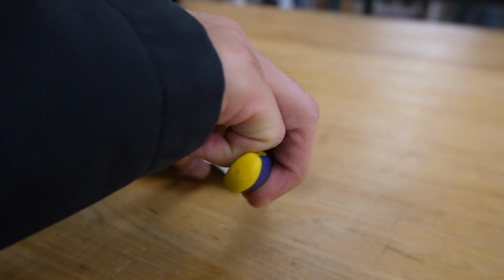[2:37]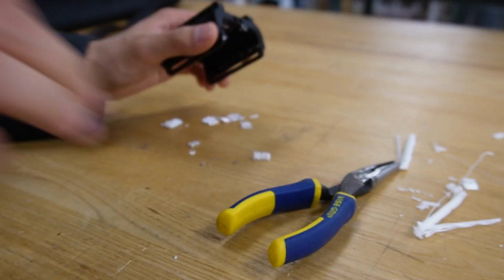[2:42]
The test run seemed to work, so I used higher grade 3D printer, which is the Ultimaker S5. This printer has a breakaway support feature that makes the removal of support material easy and results in a clean surface. The finalized part looks like this.
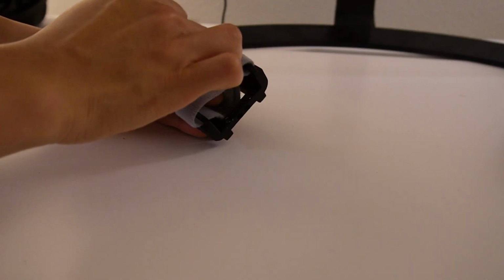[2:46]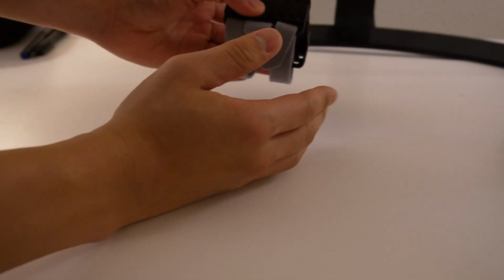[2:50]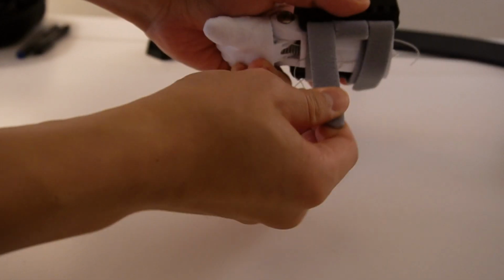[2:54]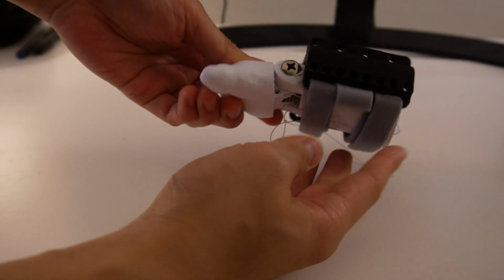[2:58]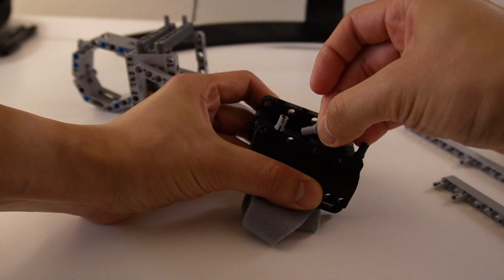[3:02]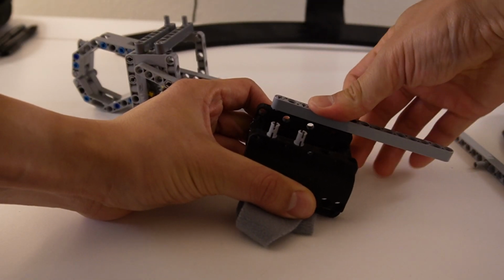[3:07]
Let's see how we can use it. I use Velcro straps from a thumb splint device I purchased previously, and this should fit to the forearm of Agent H, our user for this custom part, like this. Our intention is to use wrist actuation to open and close the grabber. I took apart the grabber design in a previous episode and mounted it into the top of custom design part.
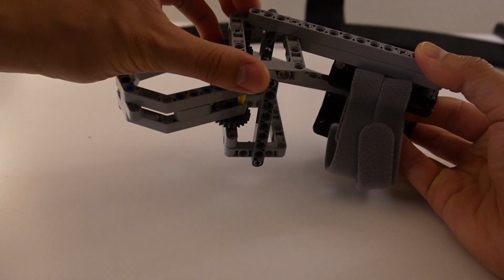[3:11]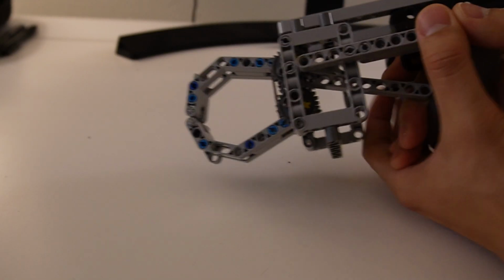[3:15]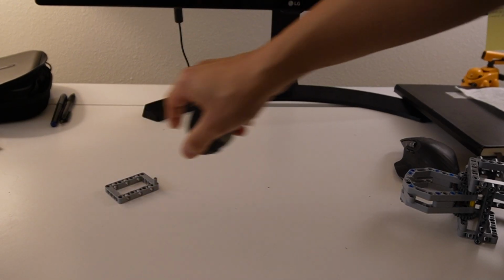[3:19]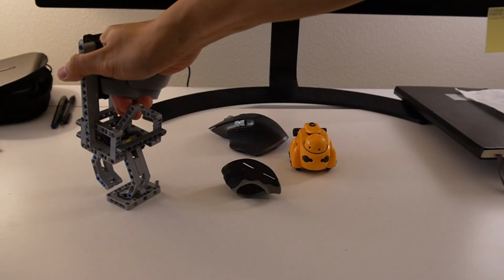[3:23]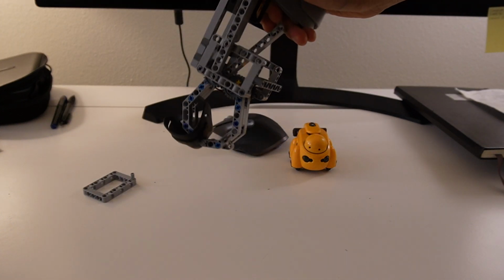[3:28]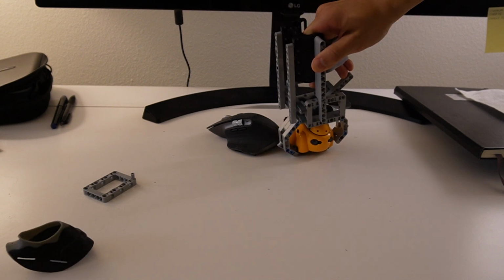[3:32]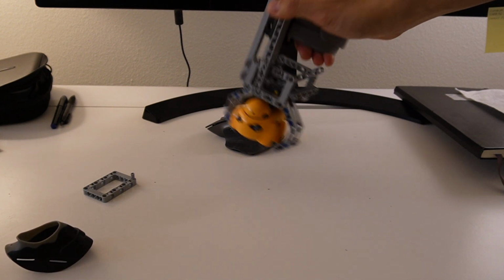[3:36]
One thing I noticed is that rectangular Technic pieces are usually spaced in odd numbers, so the number of holes on the mount should also be odd. There's a quick demonstration of how it works using some objects on my desk. It's not perfect, but we achieved the design goal to use this as a custom part that users can attach the LEGO part for different applications.